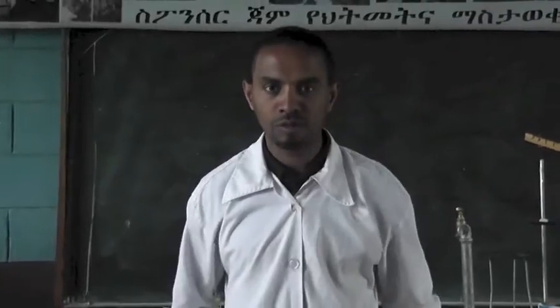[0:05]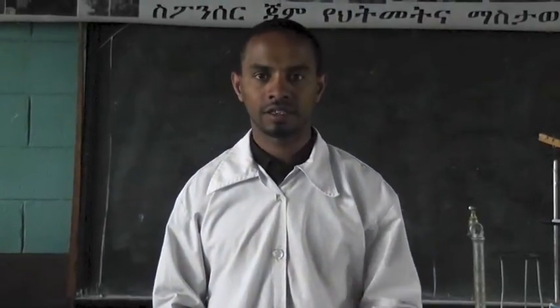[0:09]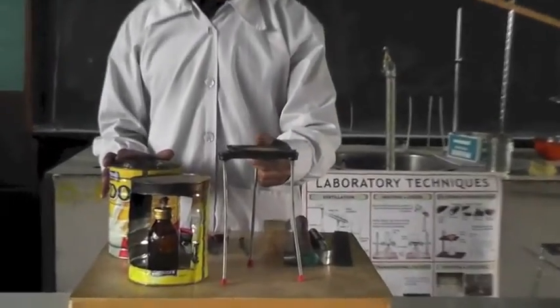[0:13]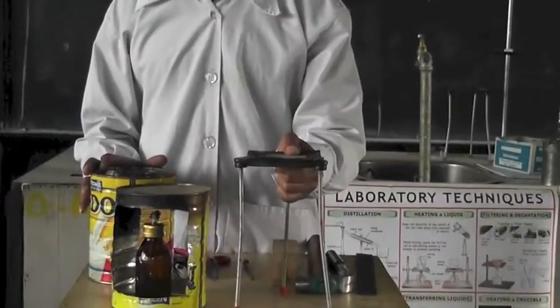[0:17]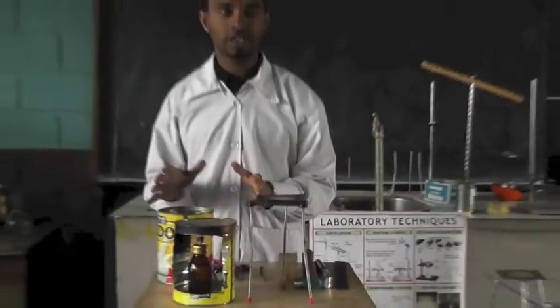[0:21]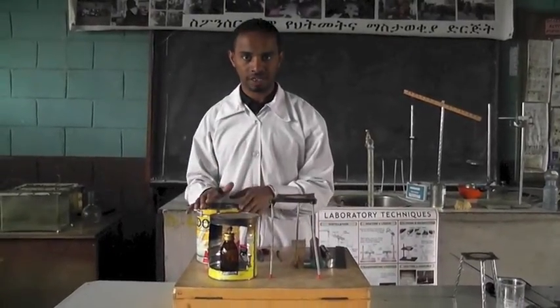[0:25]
Hello, today I will show you how to make the tripod. This is a standard tripod that we use in the laboratory, and if you have this, it is important to use the standard ones. But if we don't have, it is easy to make or to prepare from local materials. Let's see how to make.
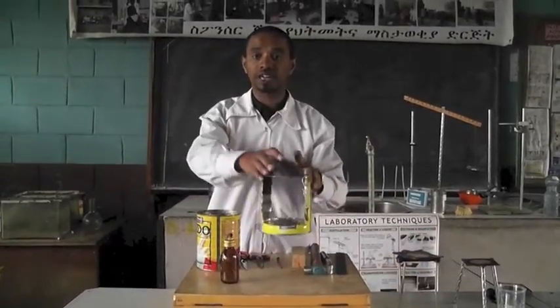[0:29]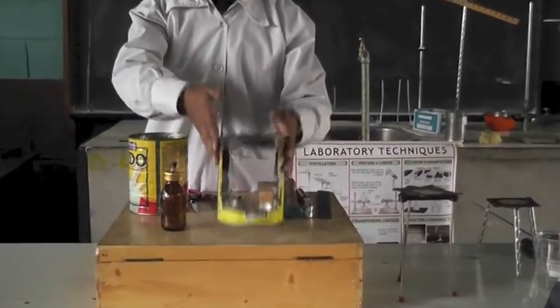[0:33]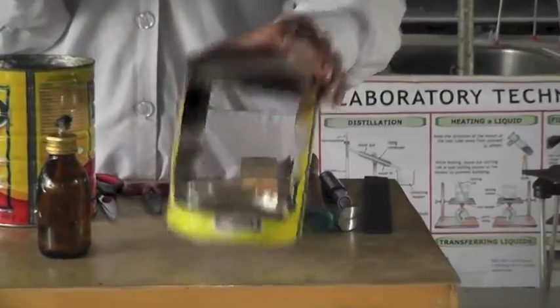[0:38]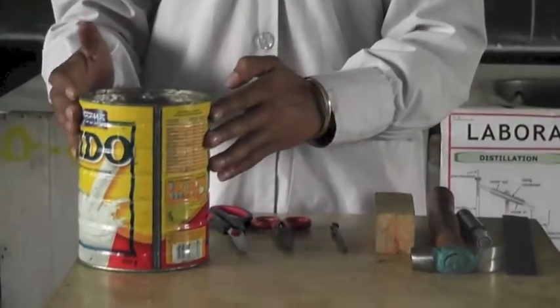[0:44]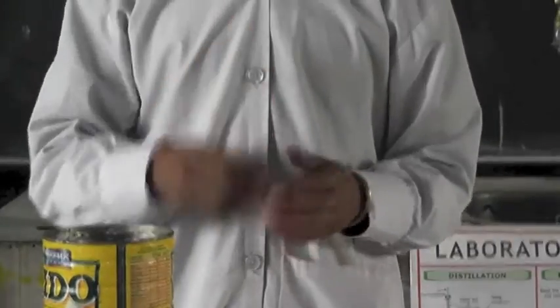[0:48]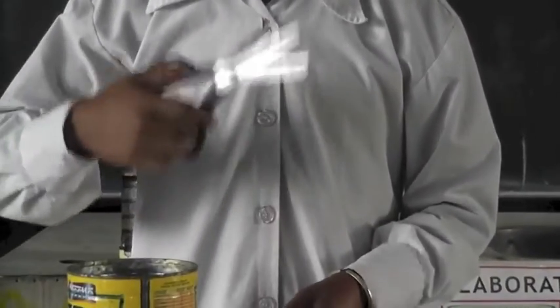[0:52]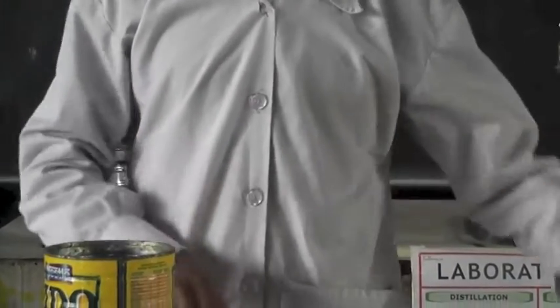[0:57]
This is the local tripod that we prepare in the laboratory, and it is important and easy to make. Let's see how to do it. Materials we need: we need a can, and we need a metal scissor. This is a paper scissor, which is important for cutting the paper only, so we don't need this. We need only the metal scissor.
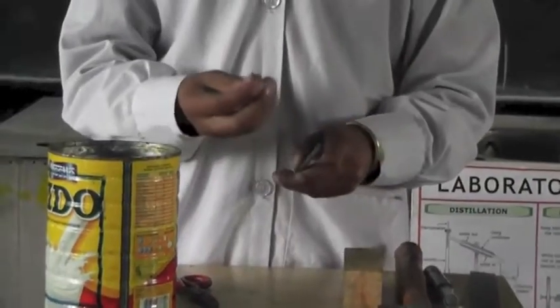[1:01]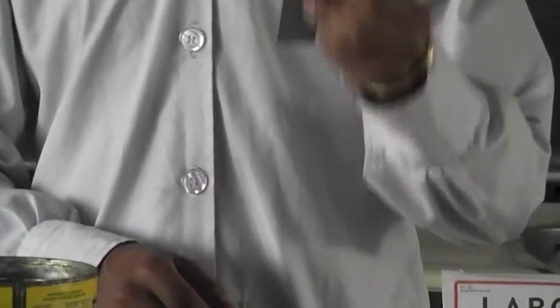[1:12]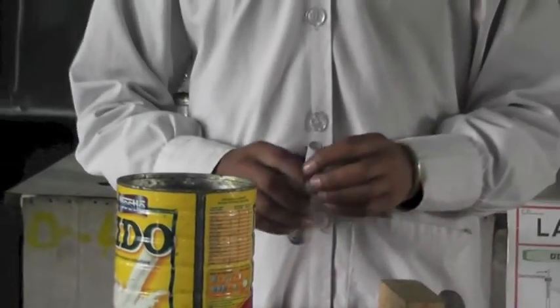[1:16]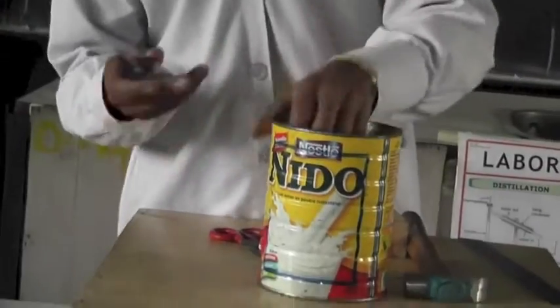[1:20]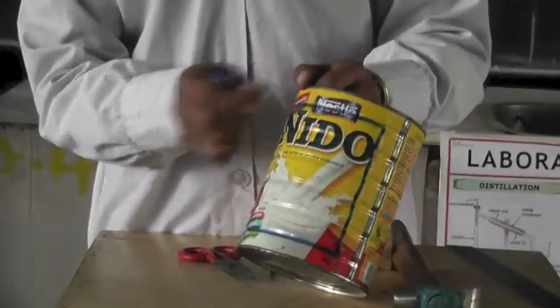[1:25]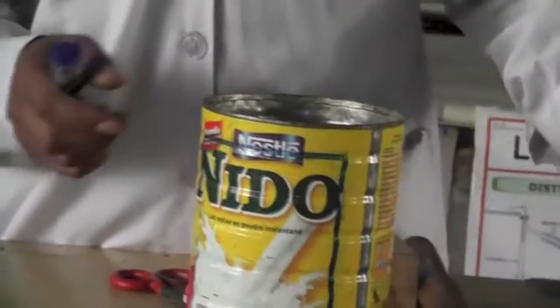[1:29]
We need nails, different size nails. We need a hammer. We need a marker. And finally we need a ruler. So the procedure: first, mark the can. Start 2 centimeters from the top and 2 centimeters from the bottom. So let's measure using the ruler.
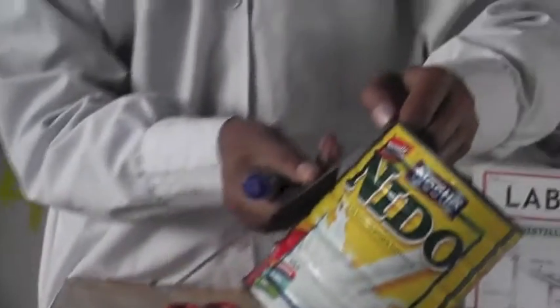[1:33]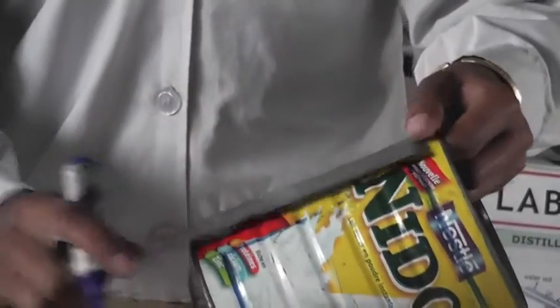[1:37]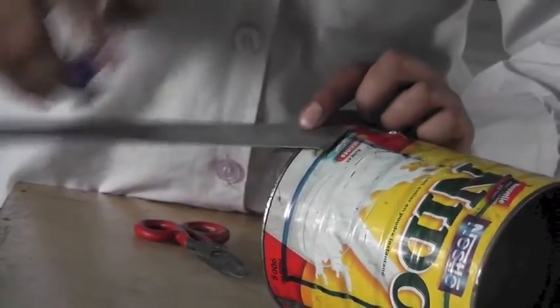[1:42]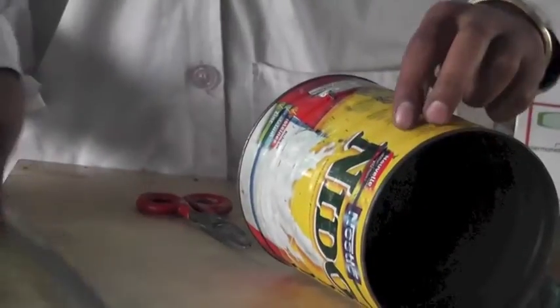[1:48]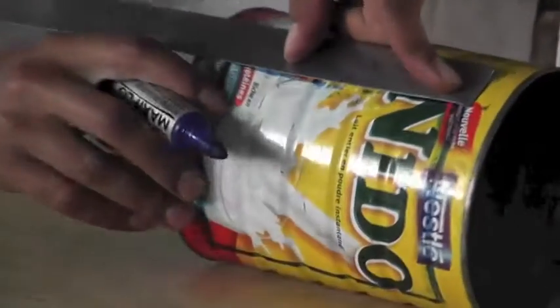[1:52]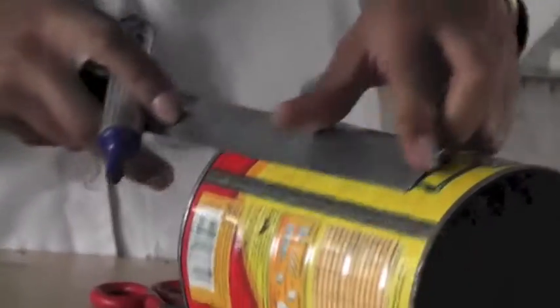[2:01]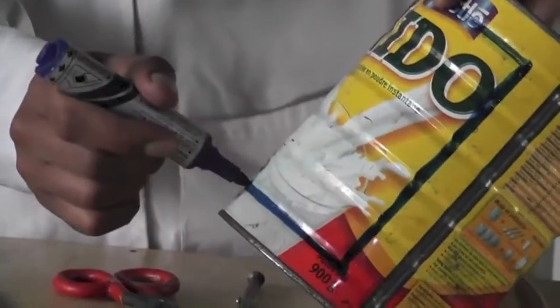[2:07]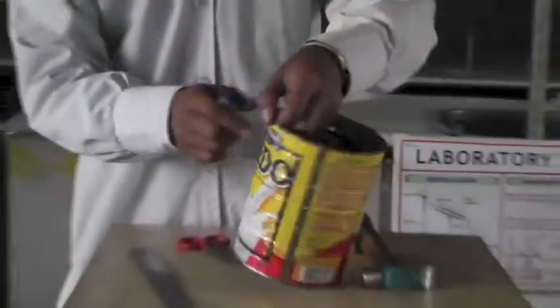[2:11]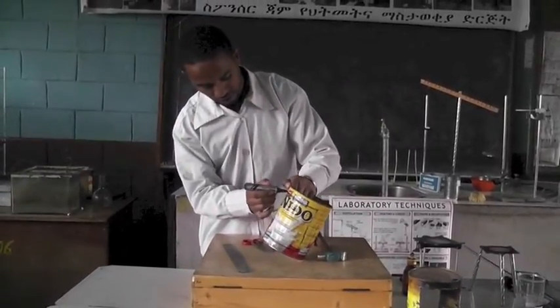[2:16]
So it is about 2 centimeters. And 2 centimeters from the bottom, it is about this. So let's make it. It is important to remove the needle part. So we connect. We do the same to the opposite side. So this is 2 centimeters. We do like this.
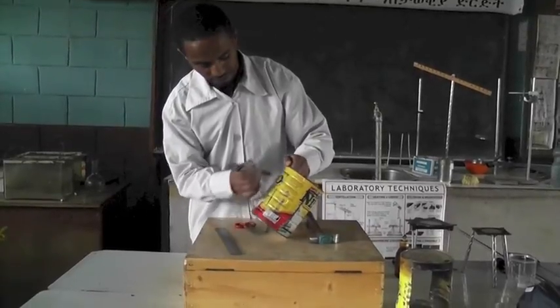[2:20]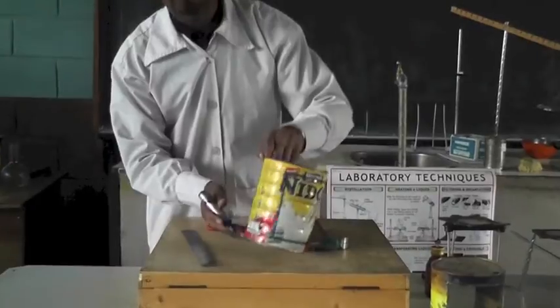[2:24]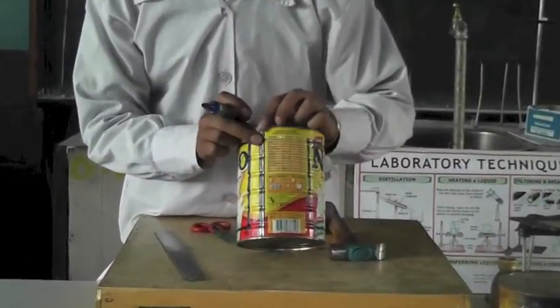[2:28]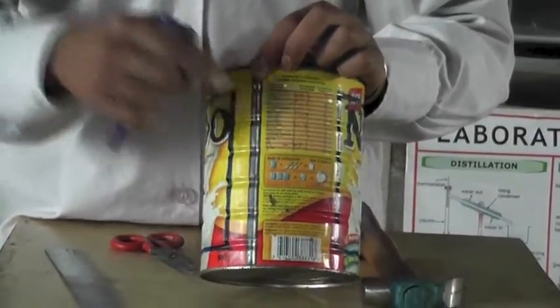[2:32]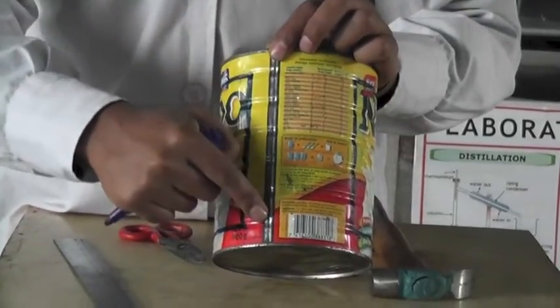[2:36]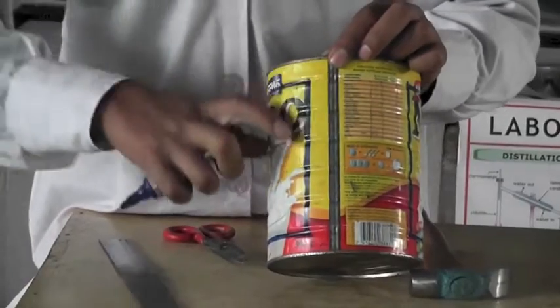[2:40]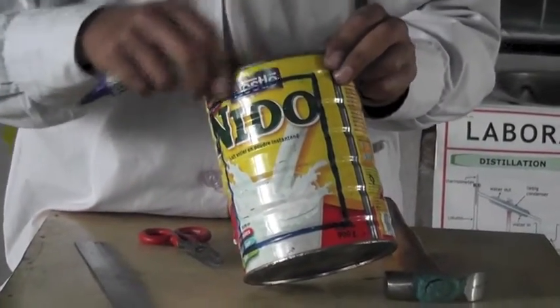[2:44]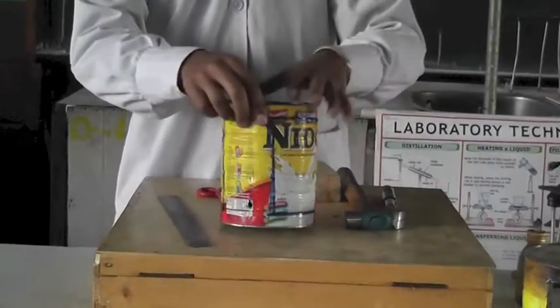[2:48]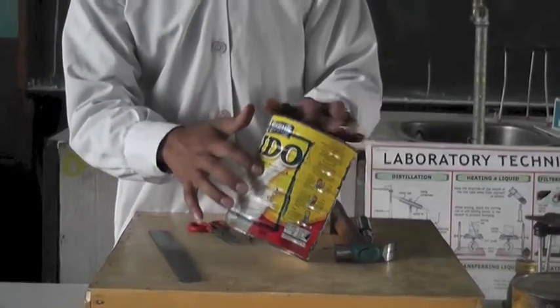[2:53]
One important point is, when you are cutting, avoid this part. So when you make a line or mark, it is better to avoid this, because it is very difficult to cut using the scissor. So avoid this part and do the opposite side. Okay, after marking, the next thing is cutting and removing the marked part.
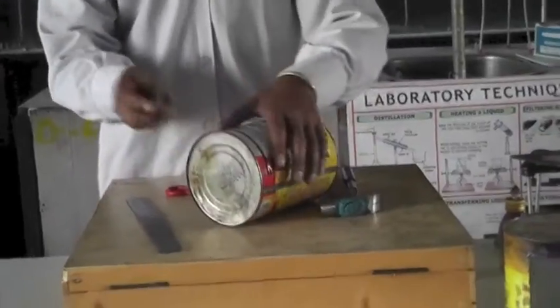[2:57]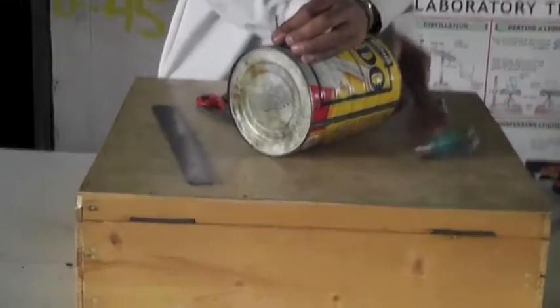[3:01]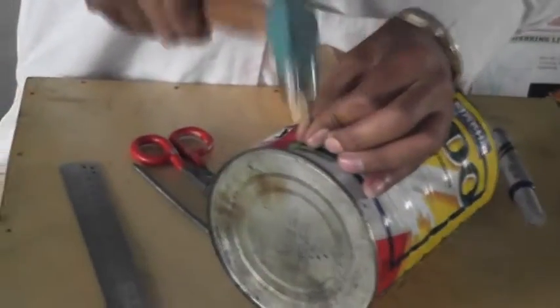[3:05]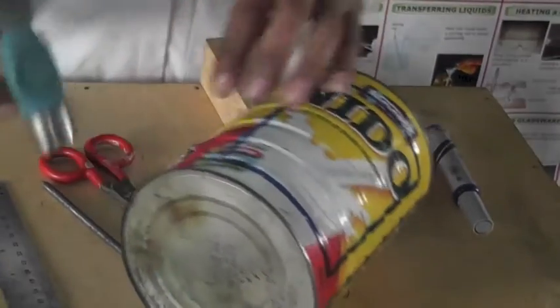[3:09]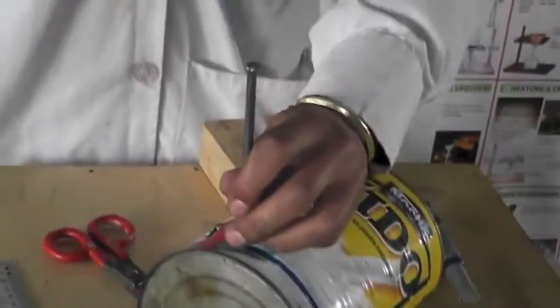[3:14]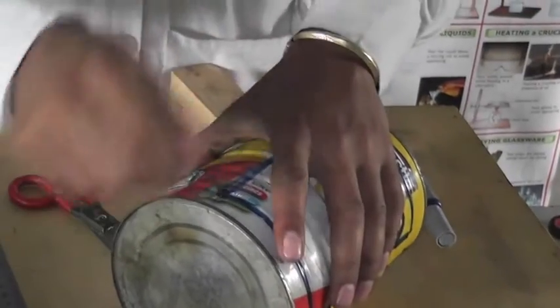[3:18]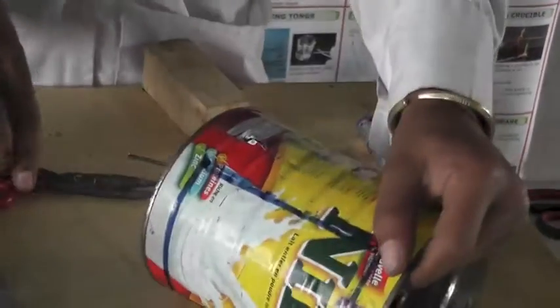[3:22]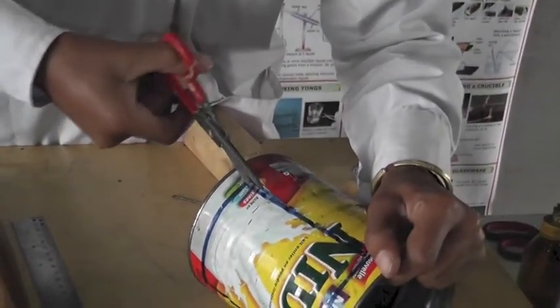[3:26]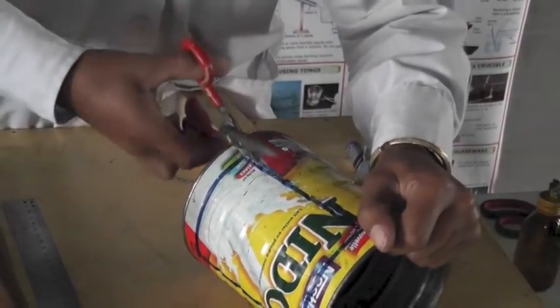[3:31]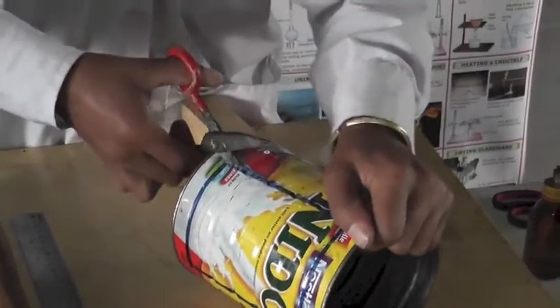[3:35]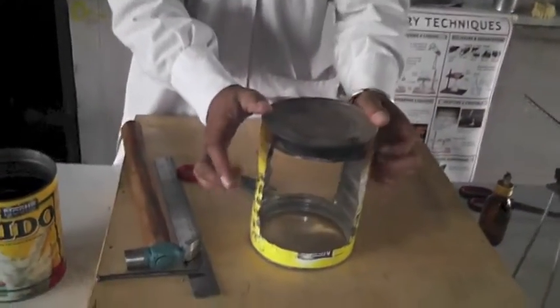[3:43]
In order to remove the marked part, we use a small nail. After making a small hole, we use the scissor, so we can make it like this. And after that, we use this scissor to cut. So after finishing, finally, we will have this kind of tripod.
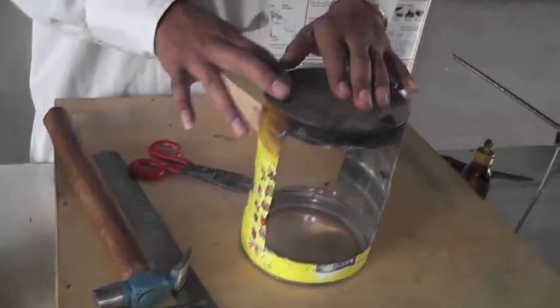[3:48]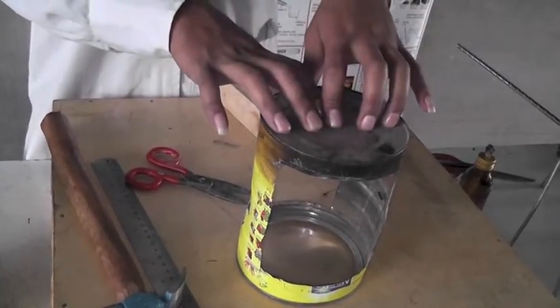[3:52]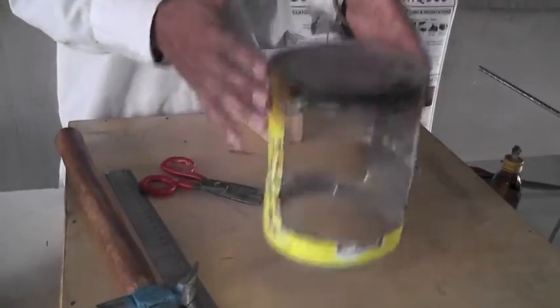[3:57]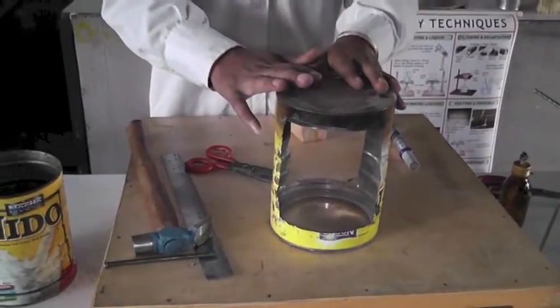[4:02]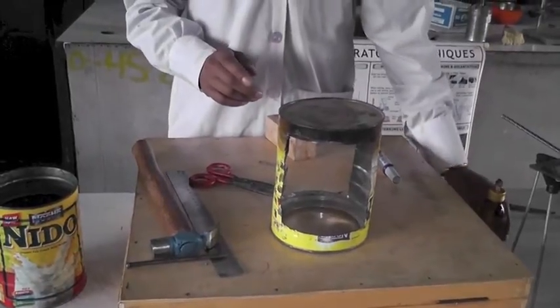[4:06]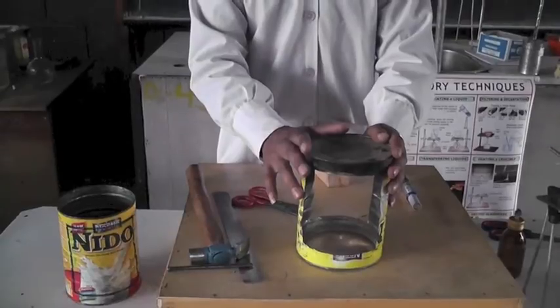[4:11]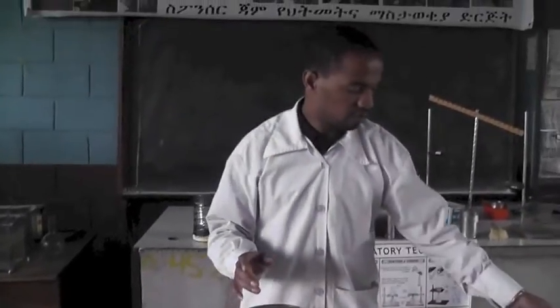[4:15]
This tripod includes the wire gauze. It is important for distributing an equal amount of heat to the material that we need to boil or to heat. So this is the final tripod that we can prepare in the laboratory. We can make this kind of tripod from different materials. This is from a can, and we have another from
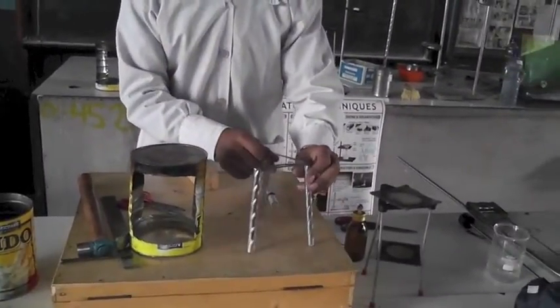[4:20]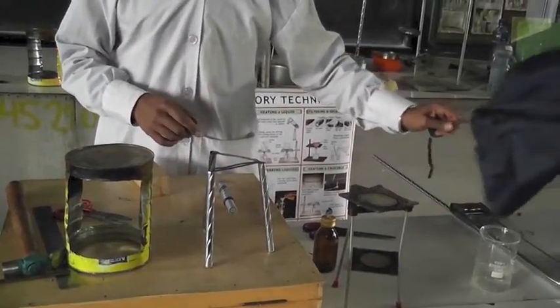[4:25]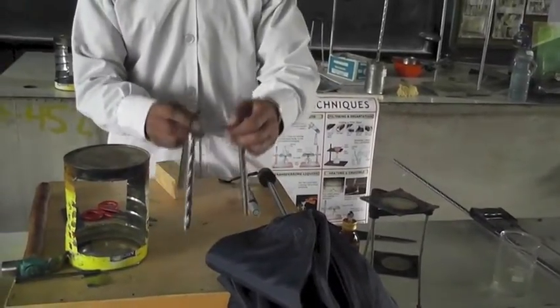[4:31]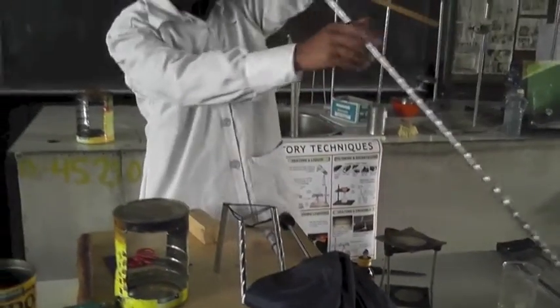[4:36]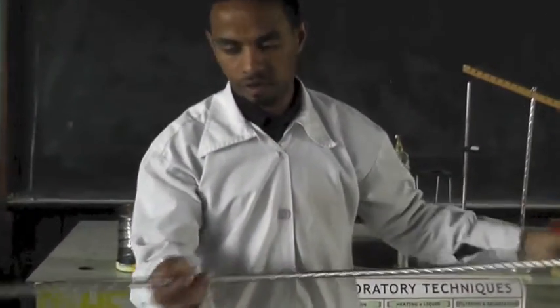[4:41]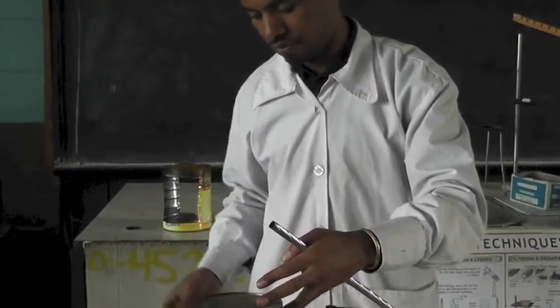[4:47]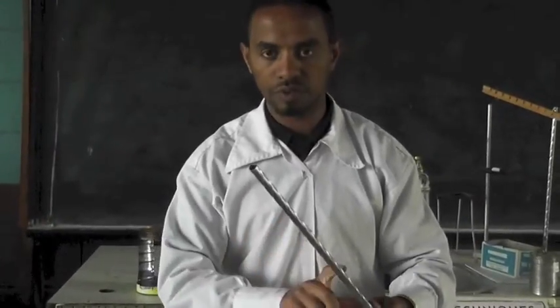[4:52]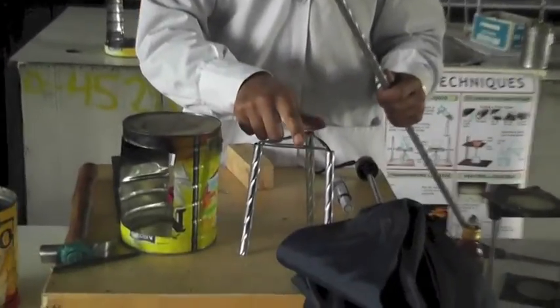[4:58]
curtain rail, and from umbrella. We can prepare from umbrella and curtain rail. This is how to make, it is very easy. First, we bring this curtain rail, which is big, and we measure equal amounts and cut it into 3 pieces, and we need 3 millimeter diameter wire,
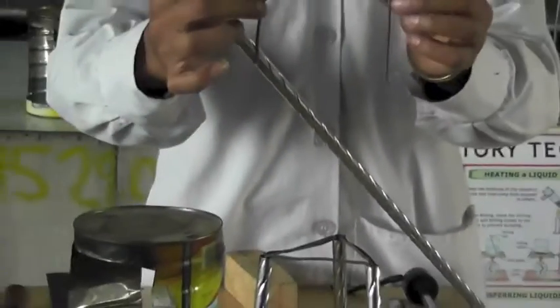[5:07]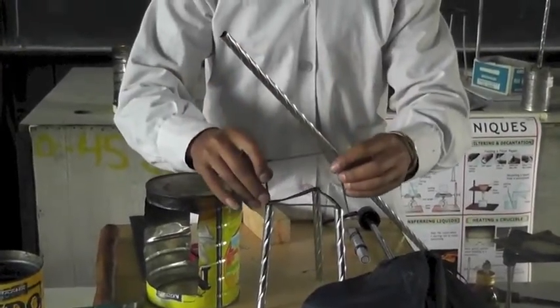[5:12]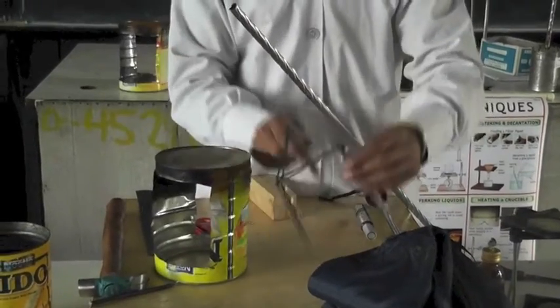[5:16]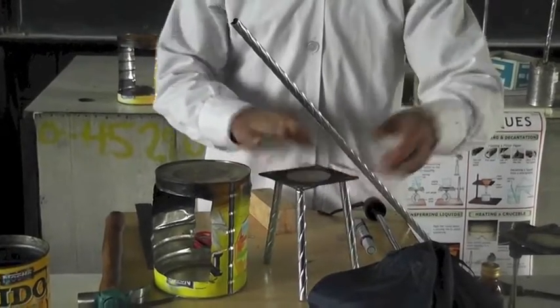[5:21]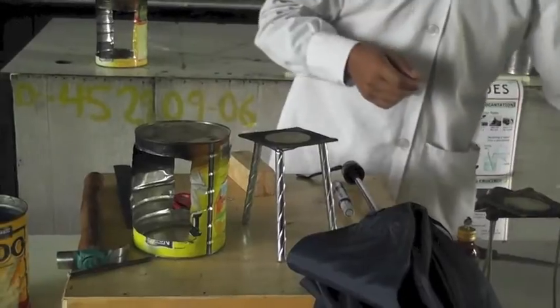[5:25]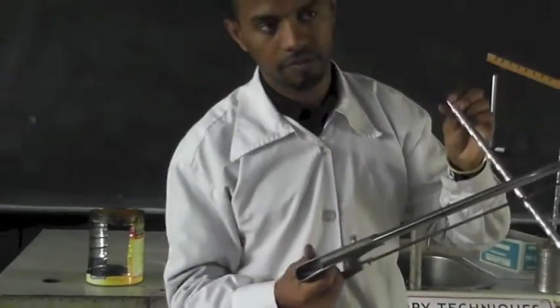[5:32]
and after that, by making the wire into this shape, we can put this in like this. And finally, we will have such a tripod with the wire. It is easy and important. And we can use a saw for cutting this curtain rail.
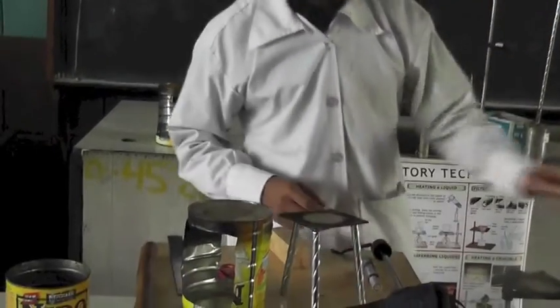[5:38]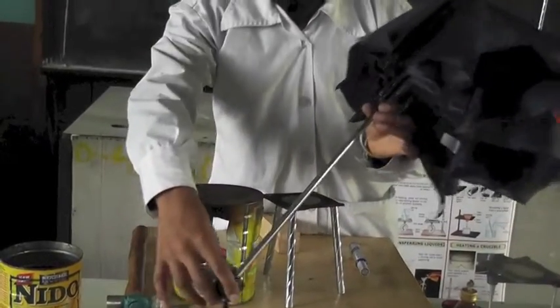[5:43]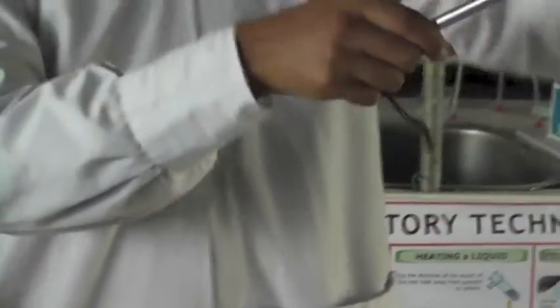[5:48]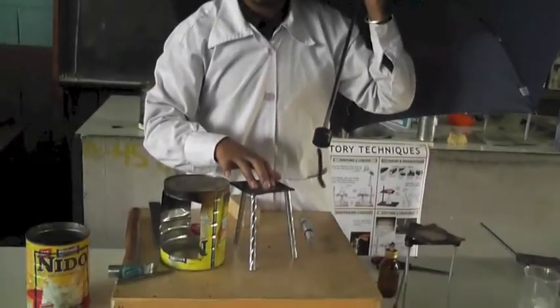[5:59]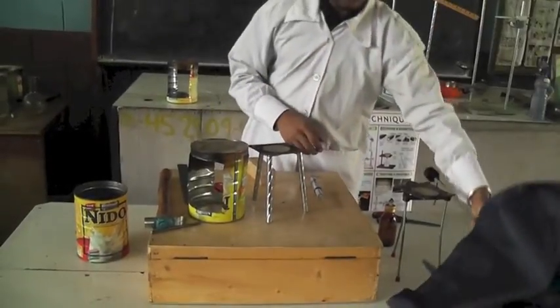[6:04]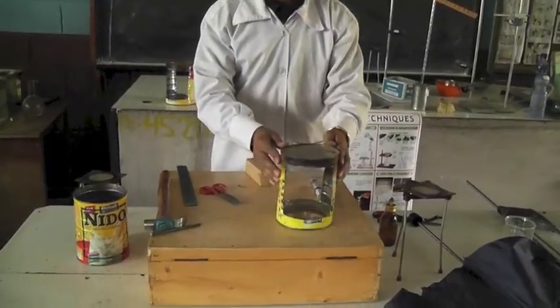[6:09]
If we can't find the curtain rail, we can find a broken umbrella. So we can use this, this is one. We have one, two, three. So we can use a broken umbrella as a tripod. This is the tripod that we use. And finally, let's see how to use it.
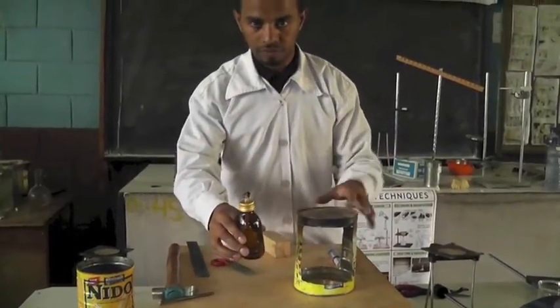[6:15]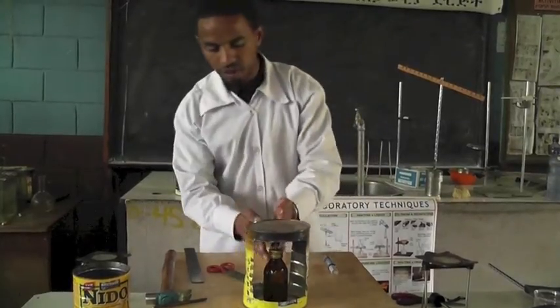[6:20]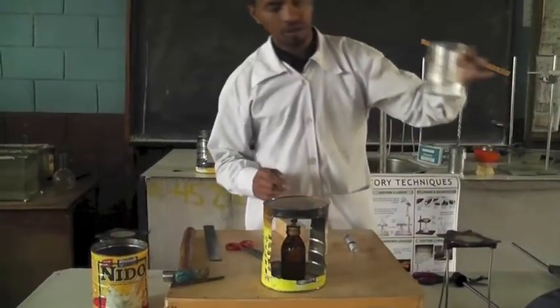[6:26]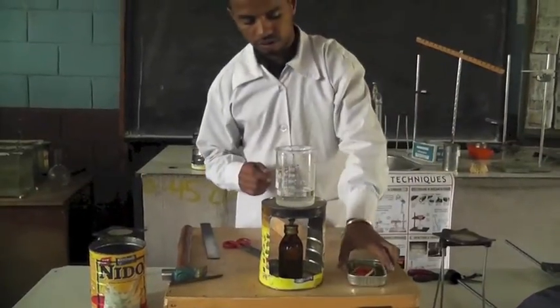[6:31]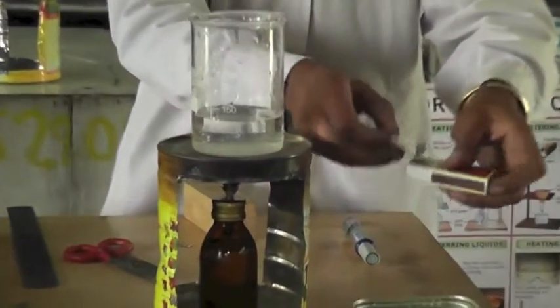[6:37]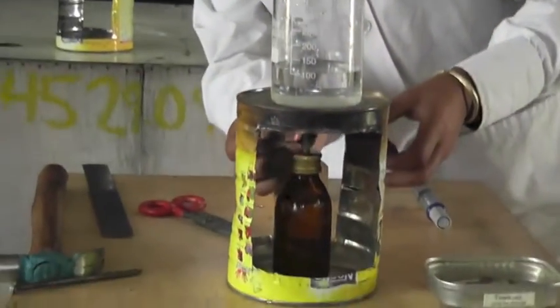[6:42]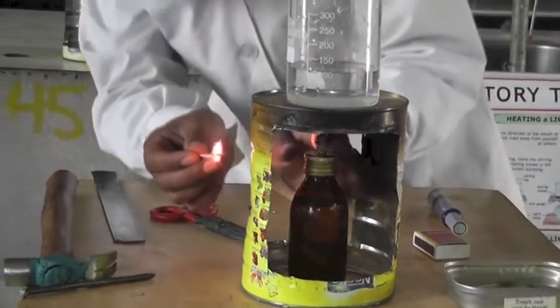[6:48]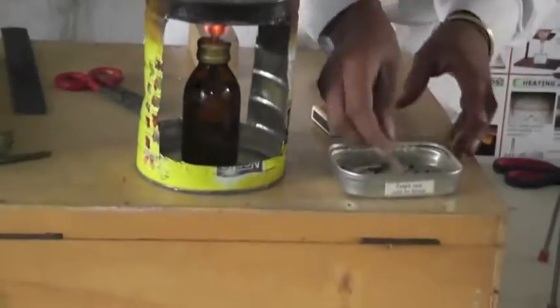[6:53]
This is the alcohol lamp, and we put the alcohol lamp inside. We put the light on, and finally we have a beaker and put it. We have a trash can, lighter or match. Finally, we will have what? Put on the light. Remember to put this.
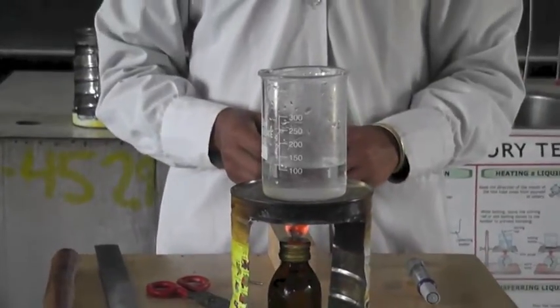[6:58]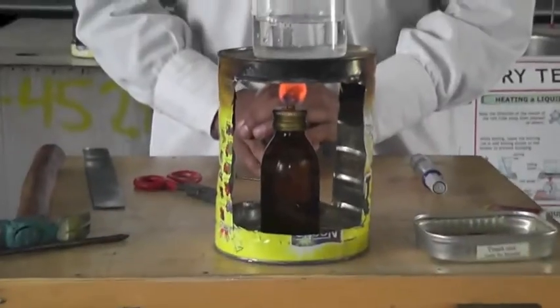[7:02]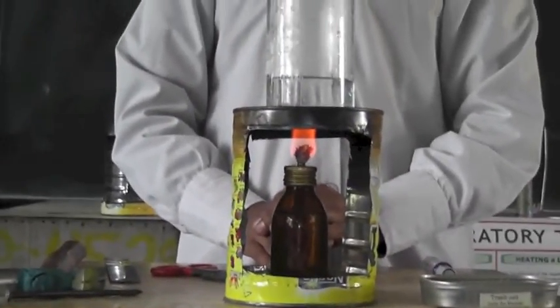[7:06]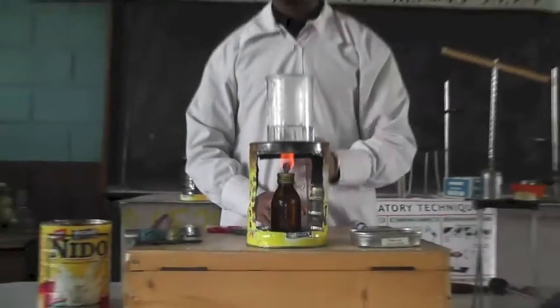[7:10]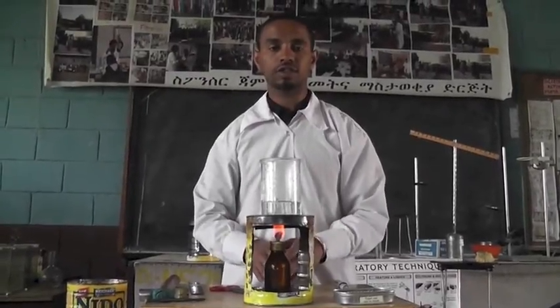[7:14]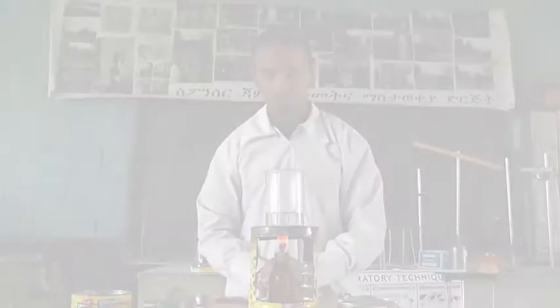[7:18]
This is the tripod that we prepare in the laboratory. Try to make such kind of things in your laboratory and enjoy.